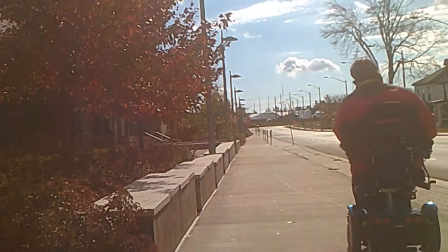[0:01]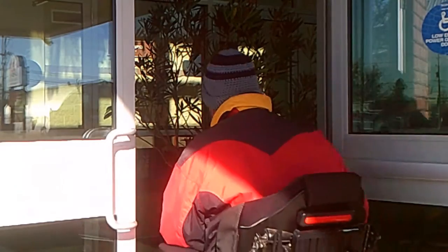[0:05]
Hi everyone, in this video I will show you how I added a GPS onto my electric wheelchair. The reason I purchased it is multifaceted. I obviously purchased it for the maps. I sometimes go to Toronto, Ontario with my electric wheelchair, as well as other cities, and it would be fantastic to have maps to come with me.
The GPS is able to play music. There are times when I take my electric wheelchair out because I'm in pain, and having the music will be soothing in addition to a short drive, helping me cope with my long-term disability.
The GPS is able to play videos. The GPS I purchased has a 7-inch screen. The videos will come in really handy while I'm waiting for doctors. And finally, the GPS has a notepad function. This will be great so I can have notes on the screen for grocery shopping or questions that I want to talk to my doctors about.
The GPS cost me $68 Canadian. It wasn't expensive. It's a generic brand that came from China. I'll put the link up for it. It's been a good experience. Let's get started and show you the process I went through. I hope this helps.
This is the top-down angle of how I'm using the hacksaw. So the paper is the guide, and I'm just keeping the hacksaw straight with the paper. Just going back and forth.
Hi everyone. So what I'm doing now is applying the primer to the metal bracket that will hold my GPS. Okay, and I will come back and do the back side as well as multiple thin coats on both sides until it's solid. I'm not going to keep showing on camera all the thin coats, but when I'm done, this will have 3 to 4 thin coats on both sides.
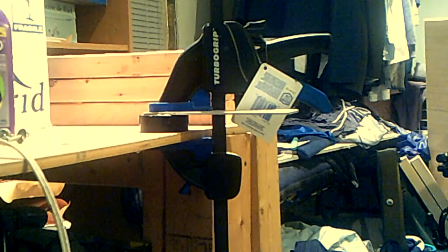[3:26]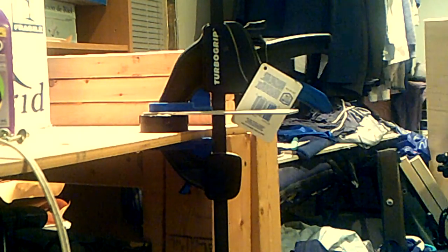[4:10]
The next step is to glue a 2-inch ABS end cap to the bracket that I'm using to mount the GPS onto my wheelchair. This is a 2-inch ABS end cap. It's normally used in plumbing to go onto conduit so that sewer gases won't escape. This end here is actually the same size as the suction cup a GPS uses to normally go onto the windshield.
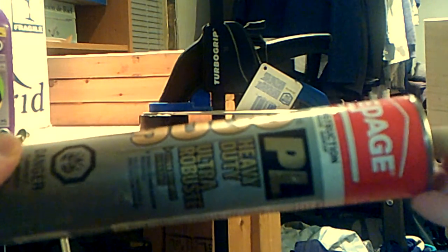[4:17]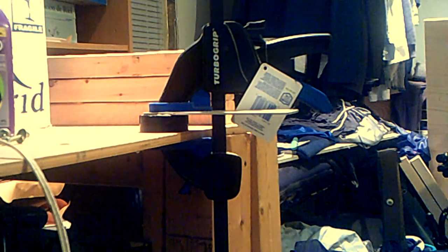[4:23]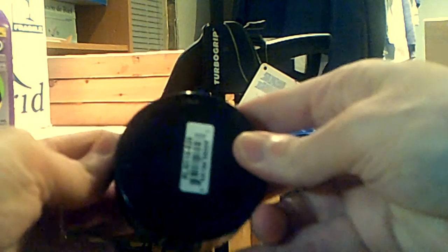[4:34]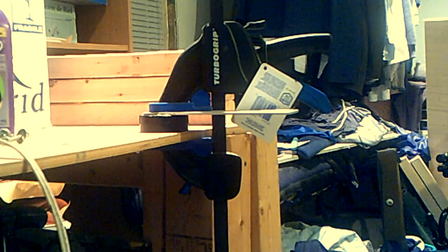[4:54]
And this is PL9000. It's the construction adhesive I'm using to join the metal and the ABS together. To begin with, I marked the area of an end cap that was going to be touching the metal, so I took a highlighter and basically wrote out the little rectangle. Then I took sandpaper and roughed it up. Next, I filled that space in with the PL9000. I pushed it together with the metal bracket.
Then with this particular type of adhesive, you can take it apart and let it vent for 2 to 5 minutes to increase the strength of the bond that's formed. So that's what I did, and then I used the clamp to hold it together so that it would glue and get past the stage where it can be shifted around. I used the clamp as spare set of hands to help compensate with using the electric wheelchair for my mobility.
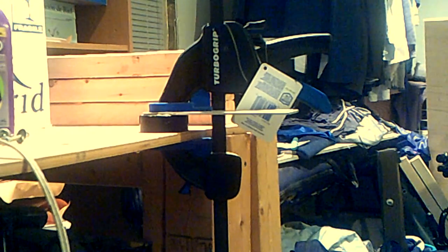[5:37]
It's actually past the point now where it's going to be able to come apart, and the glue has set. So I'm going to go ahead and release this from the clamp so I can show you the progress that's been made. So I've loosened the clamp. Okay, and here's the end cap on it. Here's a profile shot so you get a better look at it. And then top down, you can see the pattern that the clamp had on it.
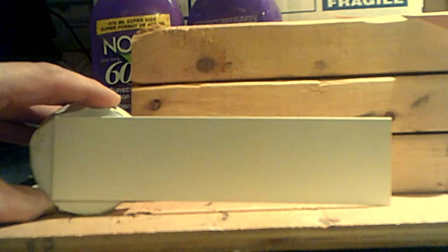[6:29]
I really put it on hard. And I will come along with a razor and just cut off this little bit of PL9000 that squirted out with the edge. And then I'll finish painting this. The primer is now on the bracket. This is the part that will face the ground.
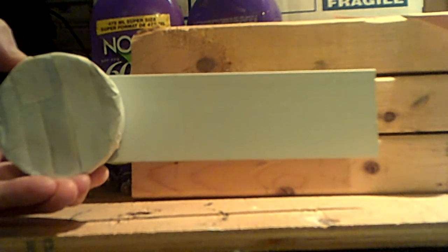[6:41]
Then this is the part that will be facing upwards, although mostly unseen because of going underneath the joystick controller for the wheelchair. So it's done, and it's time to go ahead and get this painted black. So I'm now going to apply the first layer of black to the bracket that I'm making.
The camera that I was using to film has died, so I've switched to using my laptop computer's built-in webcam. I know this doesn't have as good of quality. I do have a better one coming in the mail soon. So I'm just doing light strokes back and forth over this. And then I will also be painting the back side and giving it a second coat.
I just want to share this first bit with you so you get an idea of the steps that I'm taking to make this bracket and get it onto my computer, onto my electric wheelchair, I mean. I've removed the joystick from my electric wheelchair. I'm using the bracket it mounts onto as the same mounting point for the bracket I'm making to mount the GPS.
I've traced around the edge of the bracket, as well as the two bolt holes, so that I'll be able to drill them into the metal bracket I'm making. I traced around the edge specifically so I'll be able to center the two bolt holes on the piece of aluminum I purchased, and then the bolt holes themselves I will use to get the right size drill bit so the original screws will still be able to fit through into the joystick.
I will need to go to the hardware store to buy longer bolts. The bracket I purchased is a quarter inch thick. The bolts need that additional quarter inch length so they properly secure the joystick to my electric wheelchair when I put it back together. So next step for me will be drilling the bolt holes into the bracket I'm fabricating before I finish applying the black paint.
I'm at the stage now where I'm drilling the holes for the bracket I'm fabricating to match up with the mounting point for my electric wheelchair joystick. The drill I'm using is battery powered. Unfortunately, the battery is old and it's needing to be recharged. Instead of making a video of me showing you me drilling, instead I just want to show you it partway complete.
You can see the hole on the left is about 3/4 of the way through, and the hole on the right is just a guide to get me started. When I made the two small holes, I had it lined up with the wheelchair to check and recheck that it would line up with the mounting point for my joystick. So it is going good. I just wanted to share this part of the process with you. When the holes are complete, I'll come back.
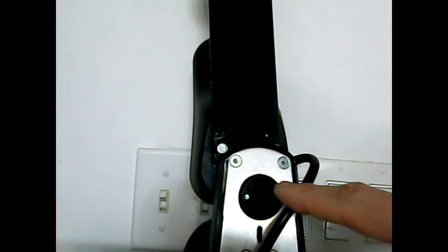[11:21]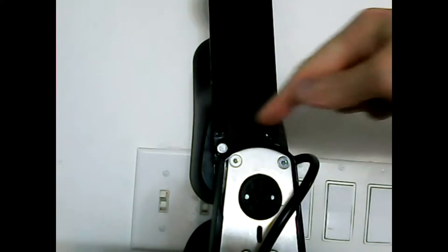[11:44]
I've now attached the bracket to the electric wheelchair. This part here is where the joystick is mounted onto. This part here spins when the joystick is moved to the left or to the right, keeping it facing forward. I wanted to tap into that component so the GPS would remain facing forward regardless of where I position the joystick. So I took out the two bolts here and here.
Then I went up to Home Depot. Home Depot has a bolt nut matching device. It has all the different sizes and all the different threads. I found the size that were used and then I bought them, but 1/4 inch longer. That 1/4 inch is to make up for the thickness of the metal that I'm using to mount my GPS.
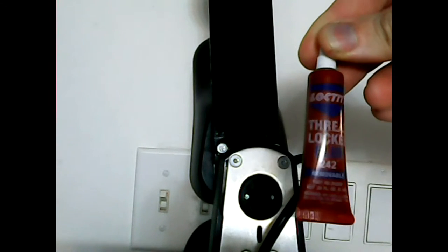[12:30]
When I put the bolts back in, I used this thread locker, Blue 242. What's so special about it is that it's able to be removed. It's like a temporary crazy glue. To remove it, you have to apply some pressure. It won't fall out when the wheelchair is bouncing down the sidewalk as the driver moves around.
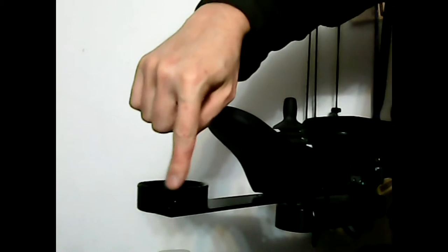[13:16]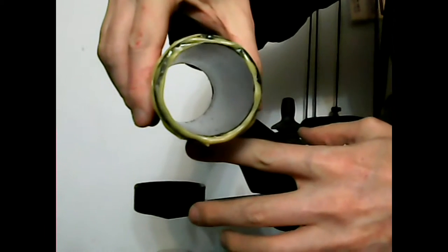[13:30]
So this is now mounted, and the next step will be getting the ABS components glued into the holder that I've used, the end cap. It's now time to add the conduit to this 2-inch ABS end cap. What I've done is put the PL9000 around the circumference as well as the end. I've put it close to the bottom so that it will go up the sides and hold it in place.
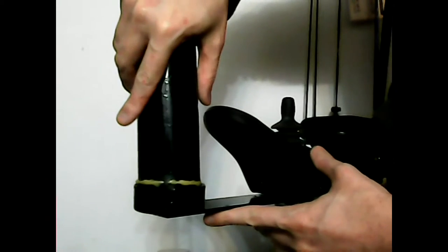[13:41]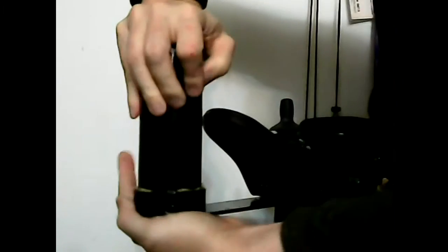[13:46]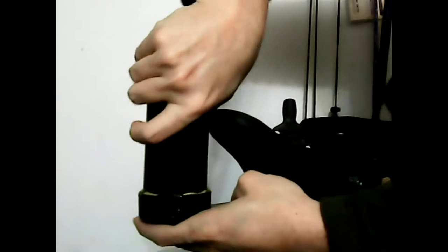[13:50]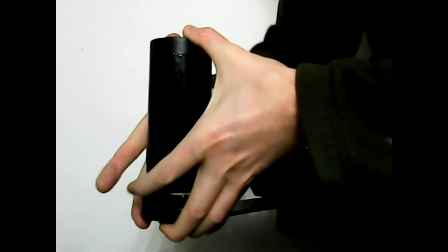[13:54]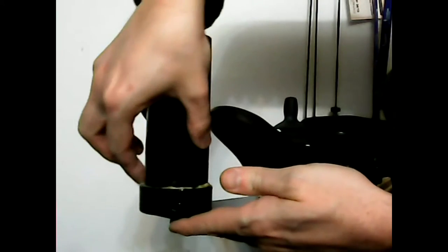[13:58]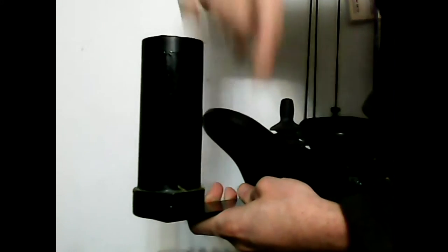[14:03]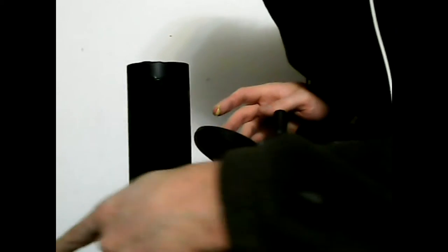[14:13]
Some of you may wonder why I'm not using ABS solvent. The reason is that I wanted more time to work with the PL9000 than the ABS adhesive gives. So what I'm doing now is just rubbing it in around the perimeter. I'm just doing it behind. Okay, and I've now gone all the way around. So it's in there. It needs 15 or so minutes to set so it won't come loose. Once that's done, I'll be able to go ahead and add the GPS to this section.
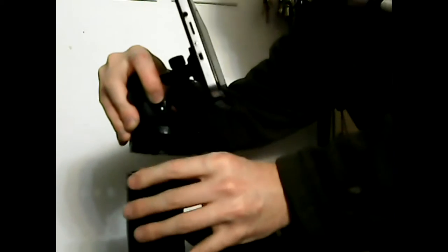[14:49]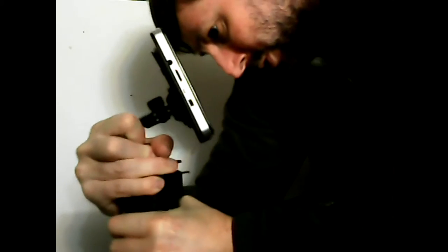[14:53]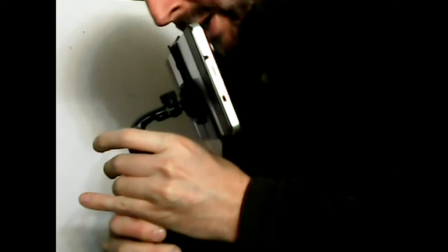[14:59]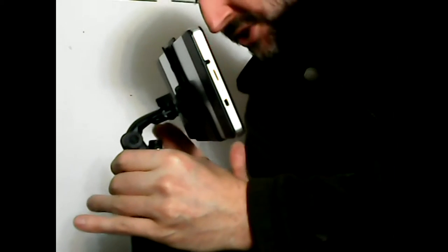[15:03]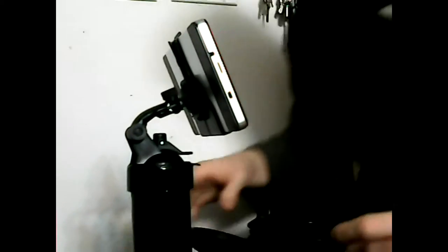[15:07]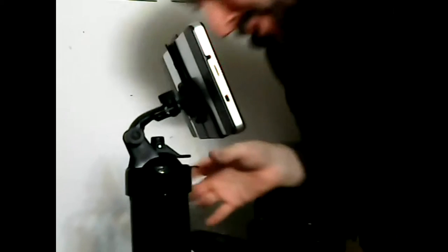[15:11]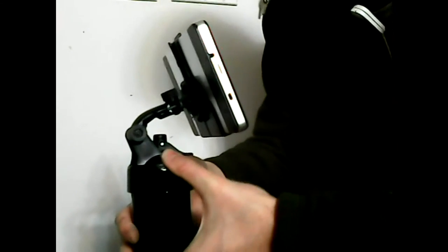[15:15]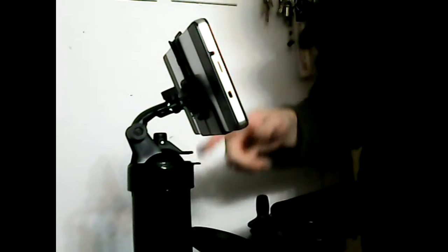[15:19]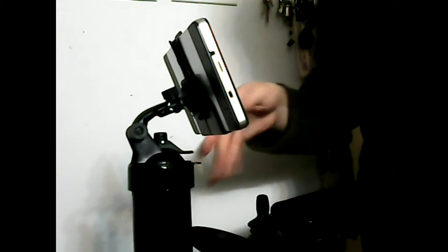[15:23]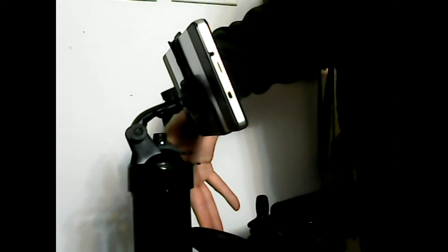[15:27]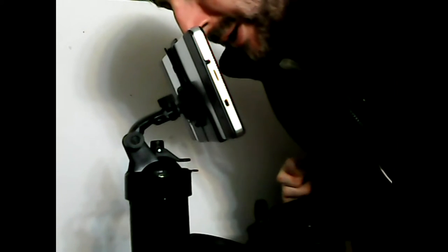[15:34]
The final step is gluing the GPS, with the end cap already pre-glued, into and onto the conduit. The reason I'm not using ABS solvent for this procedure is because I need more time to make fine adjustments. What I mean by this is that I'm effectively changing the shape of the wheelchair, and I need to make sure that I'm putting it exactly where I want it to be. What I'm looking for is the far corner that my finger's on to match the edge of the joystick as a straight line, like this. And I am happy with its position.
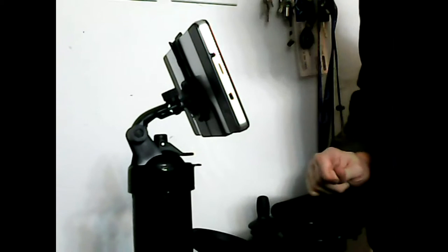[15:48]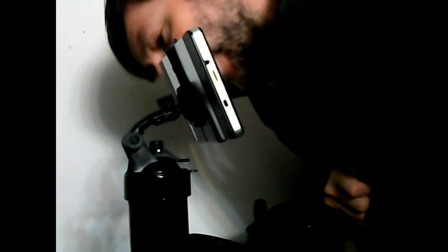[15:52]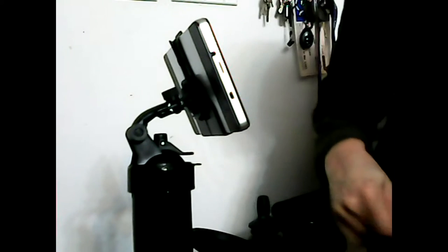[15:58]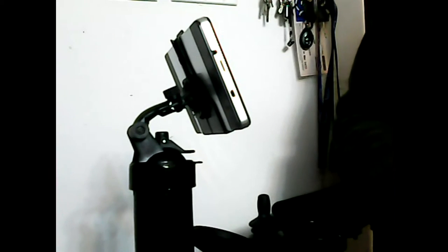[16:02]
I've got the GPS oriented like this, so it has the ability to turn that way or that way as well, left or right. So I'll have to leave this now and let it cure for the next half hour, and then it won't come loose while the remaining curing time occurs. And I'm really pleased to have got this far.
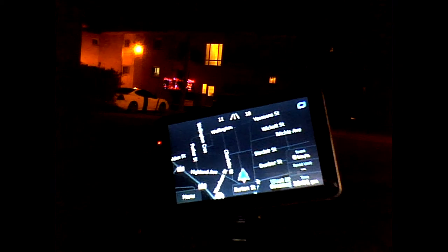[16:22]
I've come outside just to show you the GPS on, and it has found where I live. This wheelchair has a USB port on it, so that's powering the GPS. If you don't have a USB port, you could purchase a rechargeable 12-volt battery, and then there are adapters available that will allow you to step down the voltage to 5 volts and add a USB port through the step down device. These are readily available on eBay. So I have this as well.
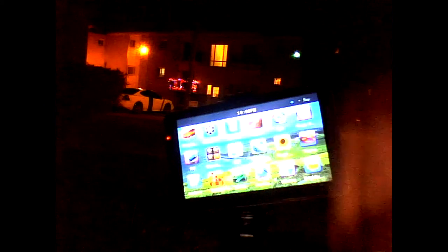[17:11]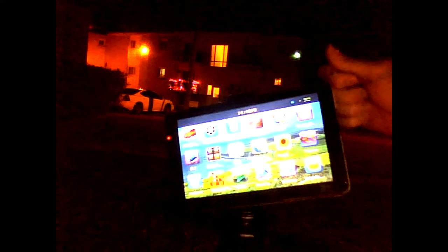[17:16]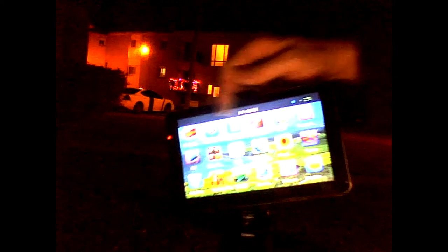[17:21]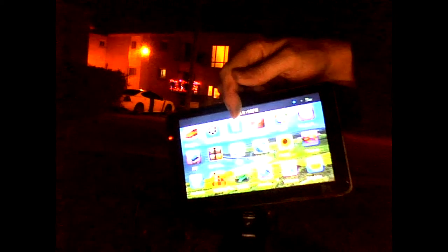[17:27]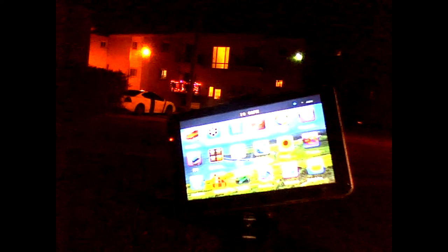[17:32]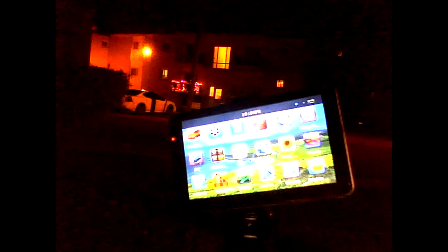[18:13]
I want to show you on here. There is a music player on here, right here. There's a movie player on here, and this ebook option is able to read text files. That will be what I use to read notes I bring to the doctors, as well as grocery shopping lists, for example. I've bought an extra long cable that connects the computer to the GPS for when I dock it to transfer files. And I bought a micro SD card that gives me 128 gigs of storage capacity in the GPS, and that will be more than enough for what I need for notes as well as music and videos.
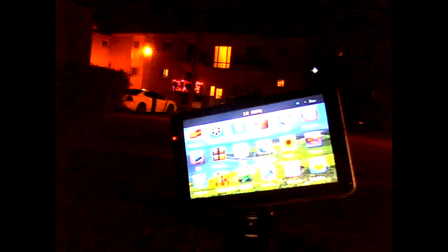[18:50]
I'm very pleased that I've completed this process. Certainly the GPS is going to make my life easier. When I agreed to an electric wheelchair, it was for me to live my life. So I've been to Toronto, as well as to Kingston and other villages in the area with my wheelchair. I didn't get the wheelchair to stay home and be shut inside. So this will help improve my quality of life.
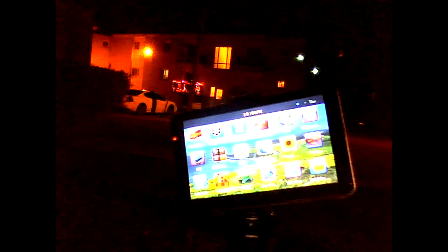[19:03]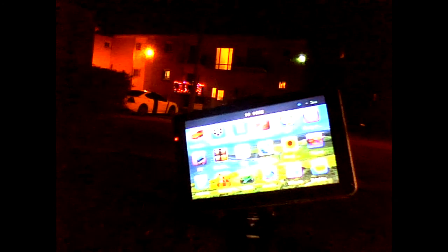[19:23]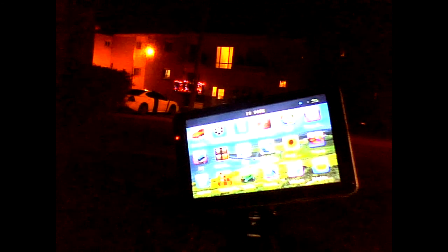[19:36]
And I certainly would recommend the GPS for anyone that is going to be traveling and still has, you know, that drive to live their life to the fullest. I understand that it takes some getting used to. Certainly someone that's young, used to cell phones and touch screens, would adapt to this easier than someone who didn't grow up with these devices. But if you'll stick it out, it'll become a great tool for you to use with your life.